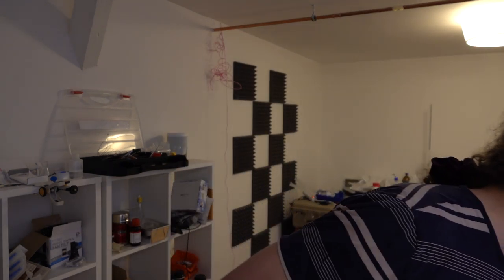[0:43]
Cool. So, I've been doing interesting stuff, and no, it's not a pipe bomb. I've been trying to make a cesium still, which I need some cesium, and not just a little bit, because I want to study the surface chemistry of it, and because almost no one ever uses cesium, it's really expensive. So if you want to buy cesium from a reasonable chemical supplier, it's almost the price of gold.
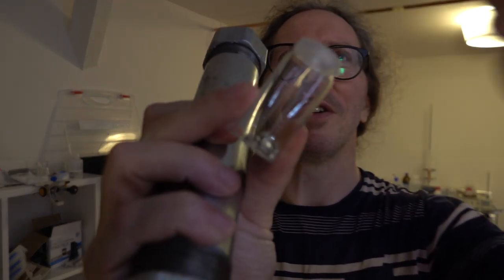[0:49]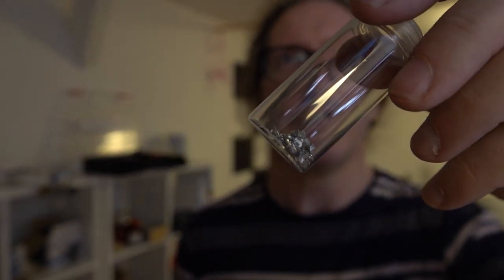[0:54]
Whereas if you make it yourself, it's lots cheaper, like 10, 100 times cheaper or something. And the way you make cesium is very simple. You get some lithium, like that. That's lithium. I'm going to focus. Come on, focus. There we go. That's some lithium. And you chuck that in with some cesium chloride. And after that, you heat it up to a few hundred degrees, and the cesium becomes volatile, and you just
distill it off. But I can't do it with nitrogen there, because nitrogen reacts with lithium really quickly. You can't do it with oxygen there, because then your cesium just catches fire. And, of course, it all gets fairly hot. So when I previously did this on a barbecue, I just flushed the whole thing with argon and crossed my fingers that the whole thing would be airtight enough. Sort of enough to get some cesium off.
But this time, I need to be able to do it on a much bigger scale and a lot better. So the way you're going to do that is you're going to get something like that, which you've got to seal at both ends, like airtight seal. It's got to be able to hold a vacuum, and it's got to be able to take at least 600 degrees Celsius. It's getting on for red heat. And whatever you do the seals with must be fairly resistant to, well, it's going to be molten cesium chloride, molten lithium chloride, lithium metal, and cesium.
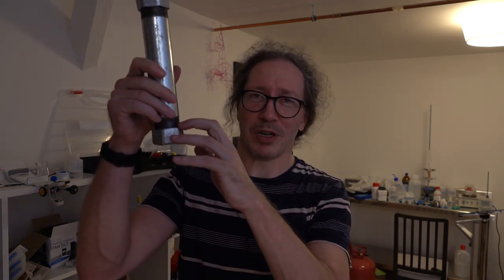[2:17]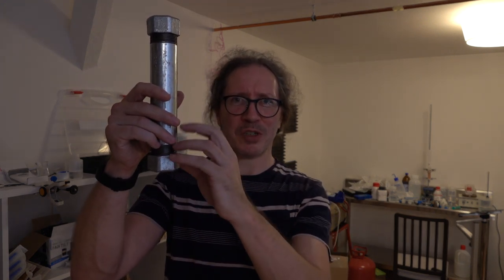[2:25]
If any of what you're using here is attacked by, say, cesium gas, you know, cesium forms an alloy with it or something, then once you start making your cesium, it's just going to rot away your seals, the whole thing's going to leak, and that's going to be the end of it. In the first instance,
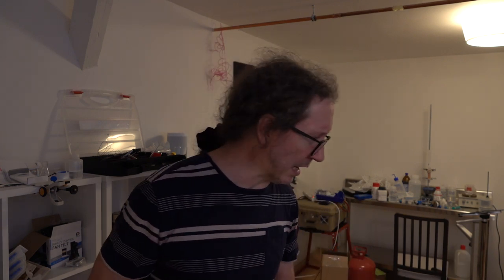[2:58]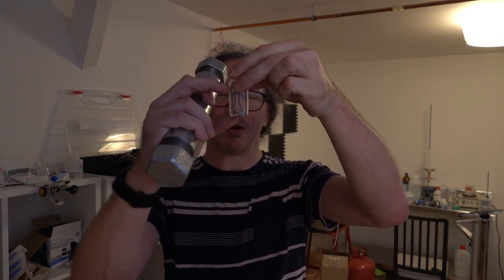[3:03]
when you're doing dangerous stuff, there is always a phased approach. The first thing is you just sort of do some proof of concept stuff, and once you're convinced of that, you move on to the more dangerous stuff. So in the first instance, my goal was set for, I wanted to distill 50 grams of cesium, which is about 20 mils. 20 mils, yeah, it's about that much cesium. So it's not great amounts.
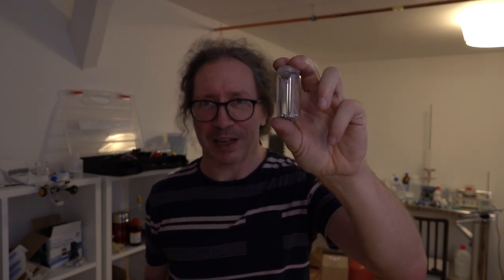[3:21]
Cesium, whilst it catches fire really quite easily, it doesn't release a lot of energy when it does. So burning about 7 grams of lithium releases about the same energy as burning 150 grams of cesium. It's that sort of league. So yeah, even if it all goes terribly wrong somehow, it's limited in what can go wrong. I need to be able to test my seals.
Now the thing is that I'm not very good at working with metals. Normally, with glass, I'm pretty competent. So my first response would be, fine, I'll just make the whole thing out of glass. Problem with that, lithium eats glass like a son of a bitch. In fact, I did promise you on this channel some time ago, I will show you why you should never get molten lithium anywhere near glass. Absolute nightmare.
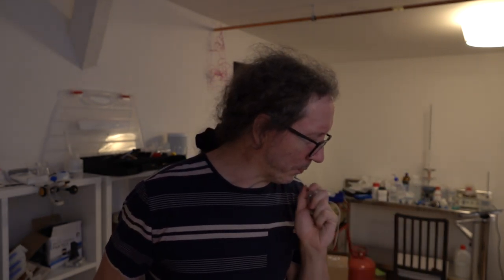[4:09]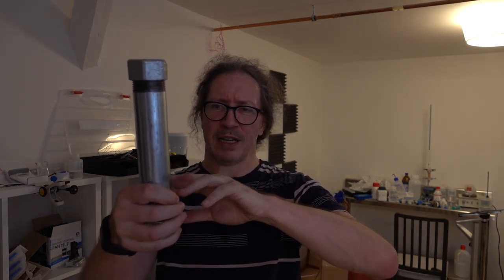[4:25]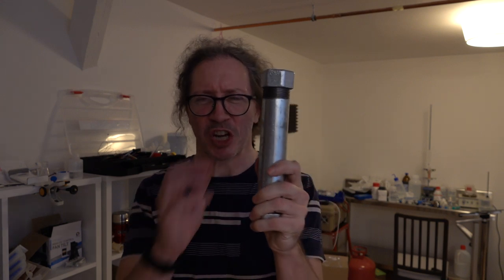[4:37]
So you can't make it out of glass because you're dealing with lithium. If it was just the cesium on its own, you can distill the cesium in the glass without too much trouble. So in the first instance, when I'm getting the lithium and the cesium chloride and I'm distilling off the cesium, it's got to be in an all metal apparatus. And so you're looking around for something cheap, fairly solid. Steel is fairly resilient to lithium and cesium.
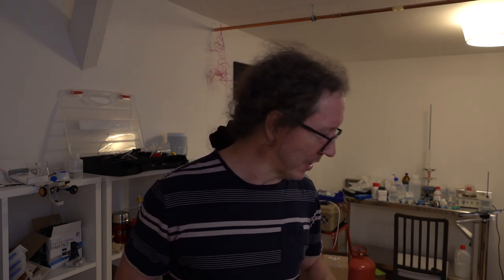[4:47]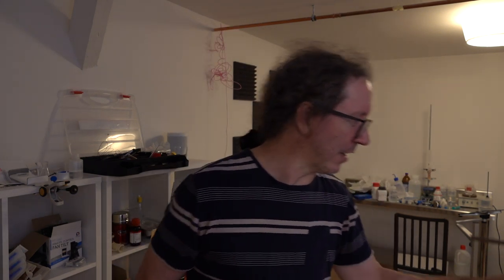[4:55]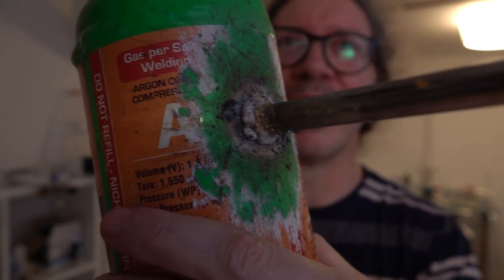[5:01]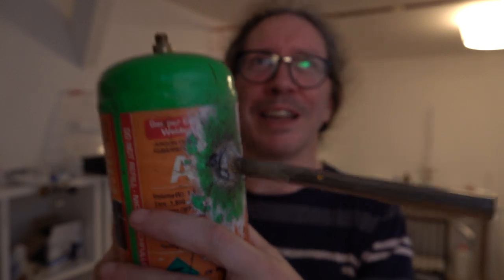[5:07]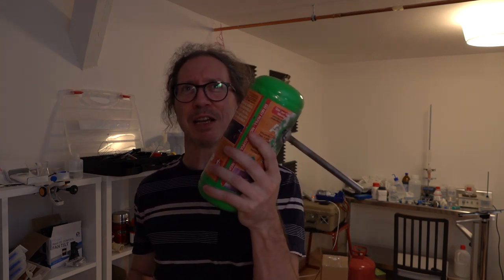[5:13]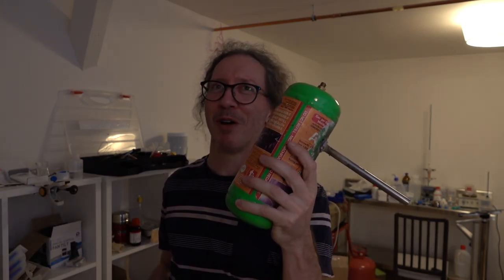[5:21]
And so I've been practicing my joining skills with metals, which in real terms basically equates to I have been torturing metal. My first attempts at welding will make many people who are any good at welding absolutely wince. So it's a MIG welder. There's no protective gas or anything, but this is almost literally my first attempt at doing it. And it's okay. Structurally, it'll hold. You know, it doesn't need to hold great loads or anything, but it does need to be able to hold a good vacuum. And this doesn't hold a good vacuum.
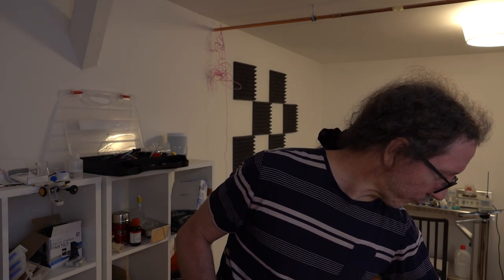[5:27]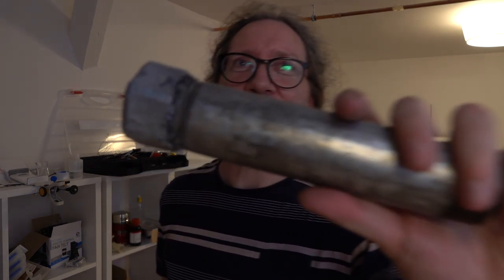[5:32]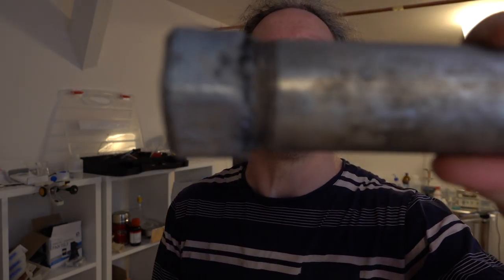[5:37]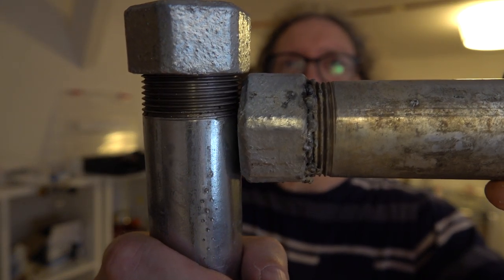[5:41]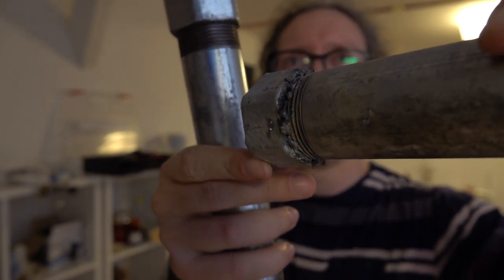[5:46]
And then I tried welding one of these guys shut, which was equally... come on, focus here. Focus. Yeah, there we go. So this thing, it's almost airtight. With a bit more practice, I could probably do it. But MIG welding, when you need it to be vacuum tight, nah, I'm just not that good.
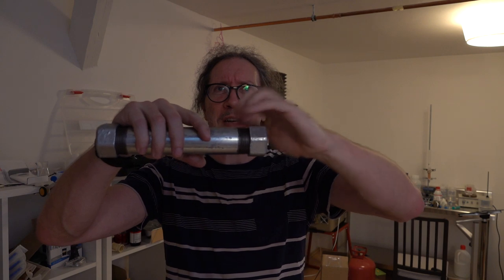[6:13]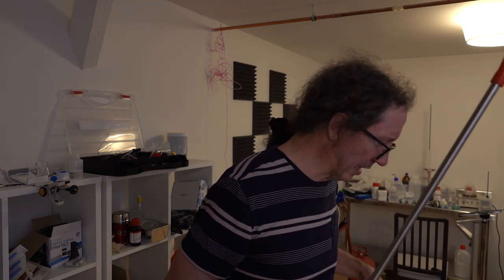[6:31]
However, there are various lower temperature options available to you, actually not that much lower temperature, like brazing. So what you do is you get your metal, you coat it with some salt of some sort that melts and protects the metal surface, and then you melt another metal on top that's very wetting, and it gets into all the cracks and makes some fairly nice seals. And with that, I had a degree more success.
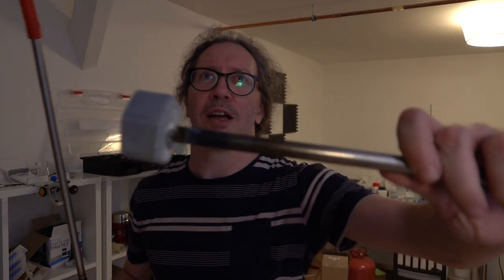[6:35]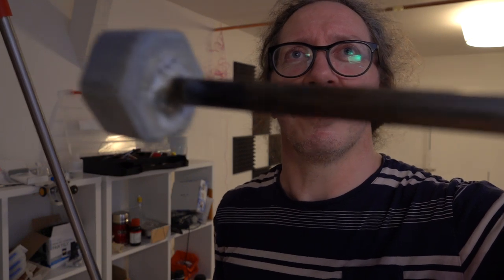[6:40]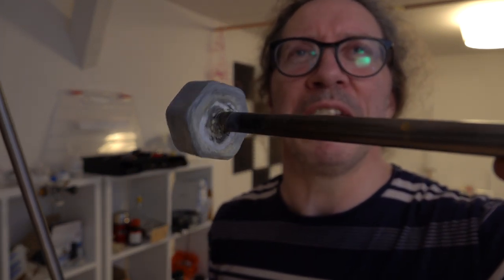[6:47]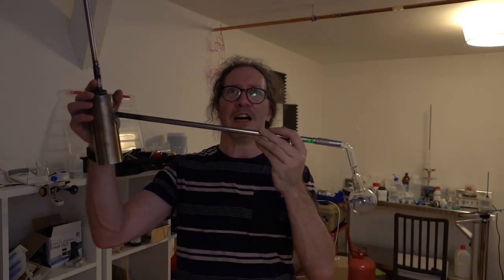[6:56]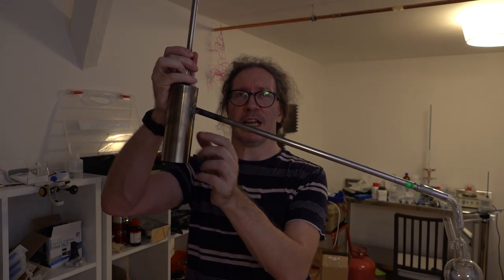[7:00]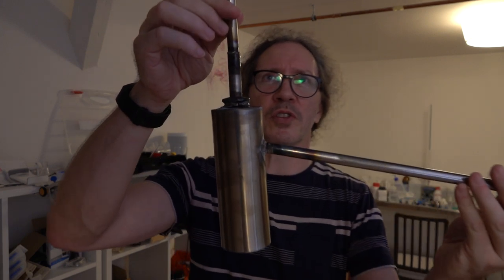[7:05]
So that was one of my first attempts on one of these guys. And if you would actually focus, there we go. Okay, he's not too bad. He's sort of airtight. Not so sure I would trust that, but on this little stainless steel boy, it's looking quasi-functional. So this is a stainless steel can here. This will take a vacuum very easily. Some fairly chunky tubes on the side.
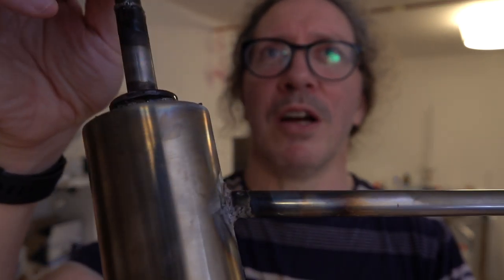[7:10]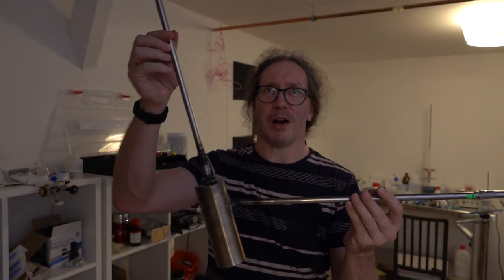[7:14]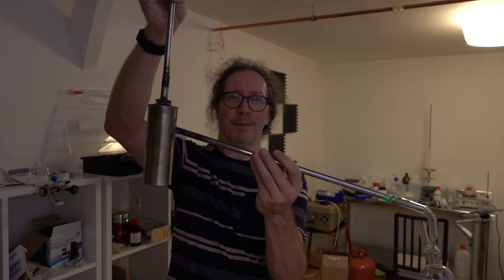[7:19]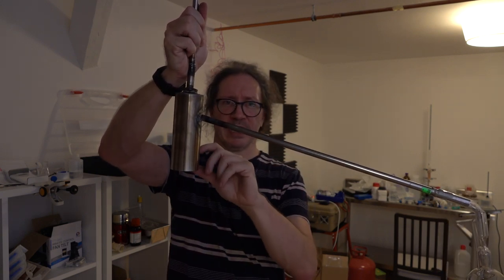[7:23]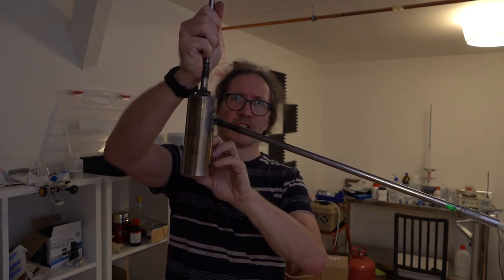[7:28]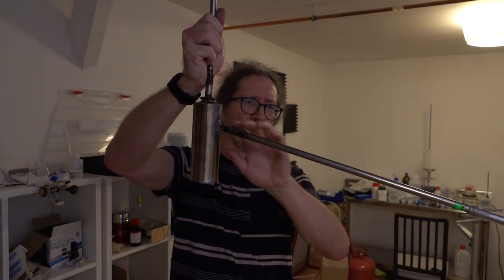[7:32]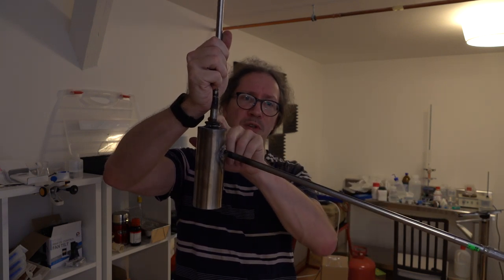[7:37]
Now you might be wondering, did I really screw up when it comes to how long these tubes are? And no, these tubes are long for a very good reason. I don't have any active cooling on any of this. So what I'm looking at is distilling stuff. It's going to be about 600 degrees here. It's going to be about 400 degrees by the time the stuff is coming off. Metal is a fairly good conductor, it turns out. Even when I was doing some of these joints, it was getting too hot to hold.
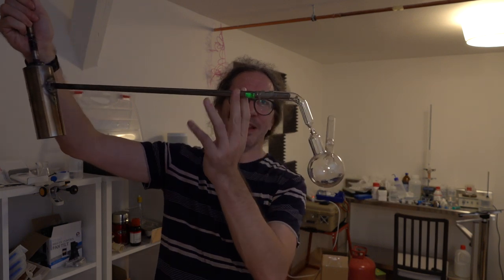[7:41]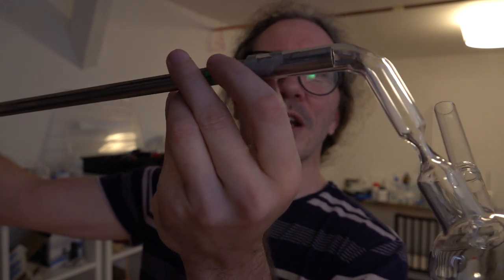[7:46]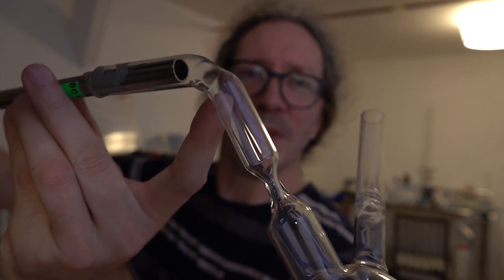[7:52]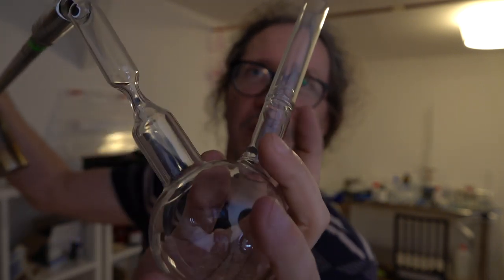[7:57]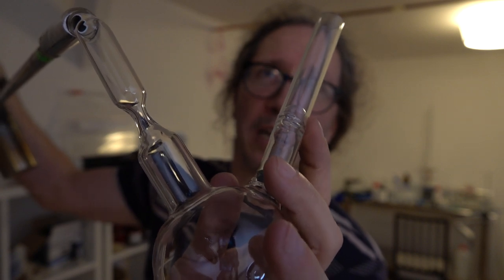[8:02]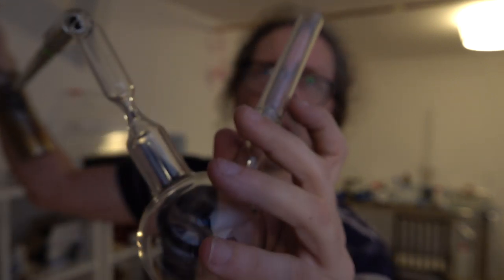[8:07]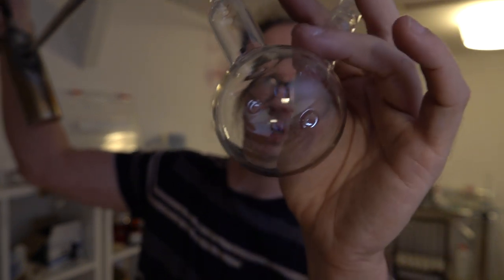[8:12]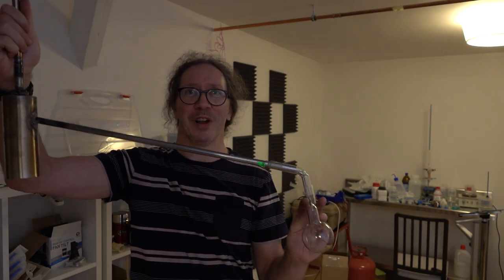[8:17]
But at the end here, this is just epoxy holding on the glass thing. So what's going to happen is the cesium is going to drop out the end there, and it's going to go through the little constriction into the flask. The flask's got a break seal on, so it'll be perfectly sealed, but when I want to open it later, I'll put that on another piece of glass, and then I can just break the little seal here with a magnet. So once I've got all my cesium in here, I'm just going to seal it off there, and that should hopefully be it.
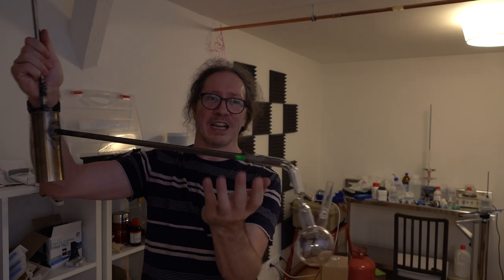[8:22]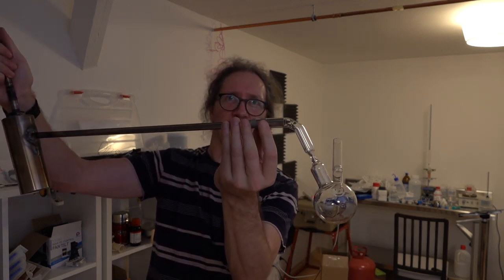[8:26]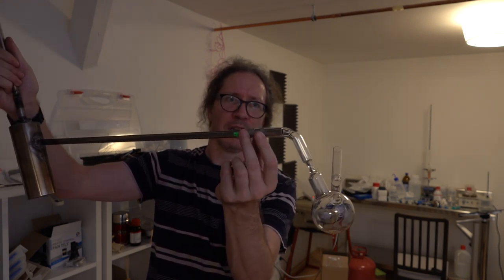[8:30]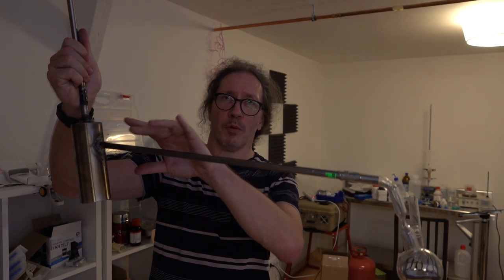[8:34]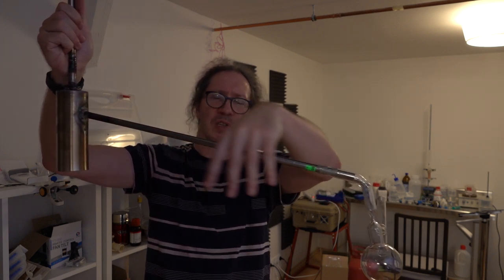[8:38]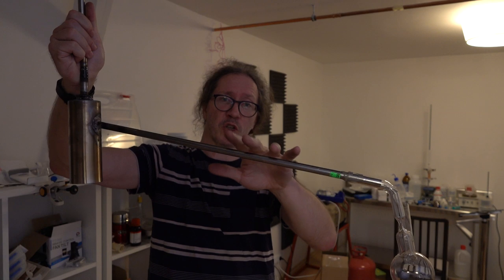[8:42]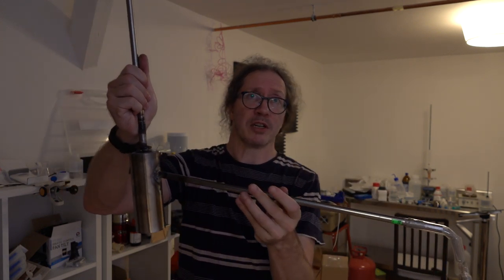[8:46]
So the reason this is so long is it has to get cool enough by the time it gets to here that it's not going to trash the epoxy. If it trashes the epoxy, I lose the seal, air gets in, the whole thing is kaput. What I'll almost certainly do is put a little serviette or something over here, which I can constantly spray with water to make sure that this doesn't get above 100 degrees. That should be fairly sensible.
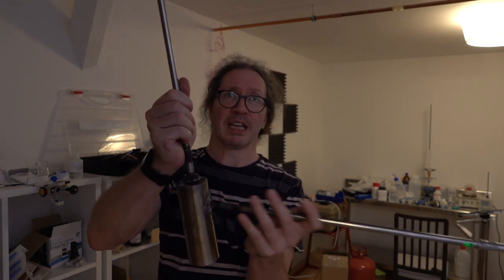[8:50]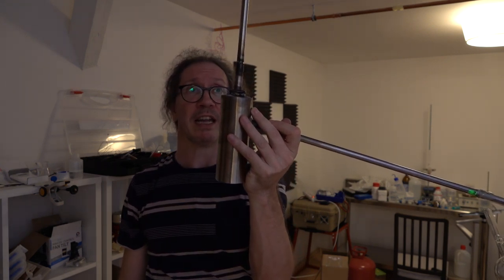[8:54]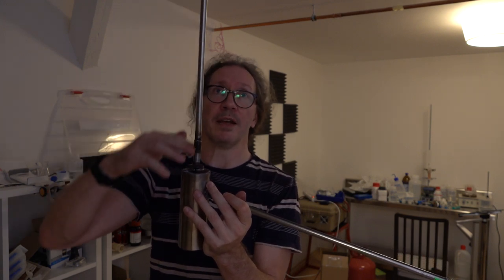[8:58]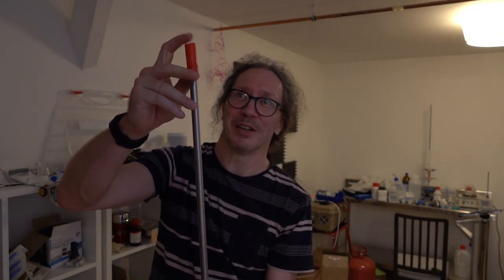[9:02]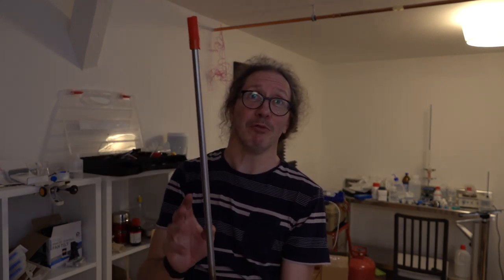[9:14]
Likewise, I need to be able to get my lithium and my cesium chloride in here. So that's what the long tube at the top is for. But again, I need to be able to connect something to put the vacuum on at some point. And I don't have any metal to glass seals, so it's just going to be a rubber seal here.
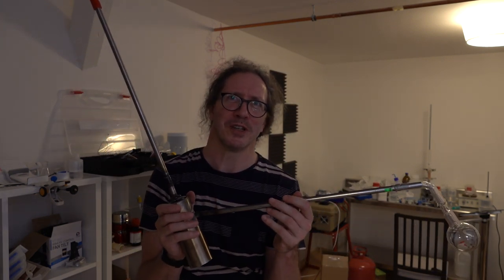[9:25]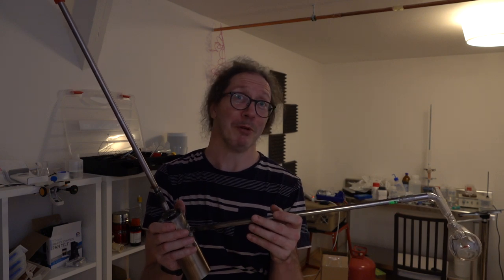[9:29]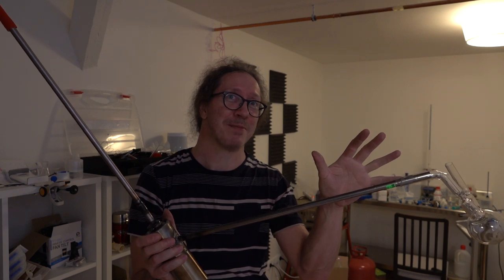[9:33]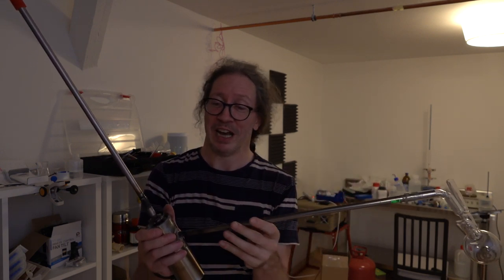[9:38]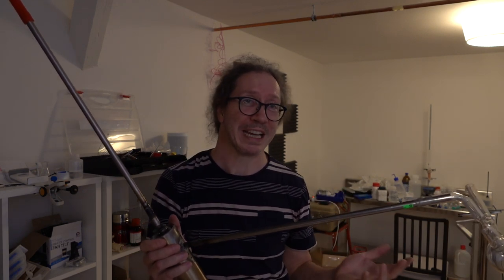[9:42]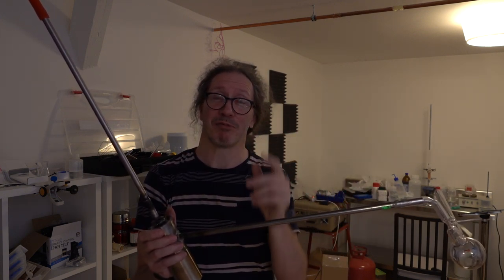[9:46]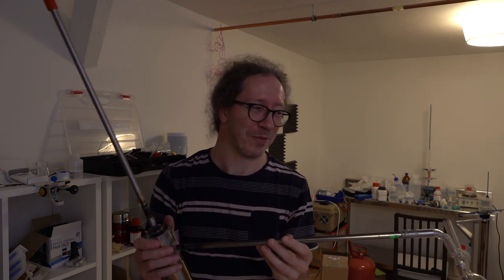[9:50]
And in principle, once you've vacked it down, you should just be able to seal it and that's it, you're done. Prudence says that when you're doing it for the first few times and you're not entirely sure what's going to happen, you leave it open to the vacuum system, because then you can see what the pressure is in the system. And if the pressure starts going up for any reason, there's no real way it can, but if air starts getting in here, you'll see the pressure change. Important need to know information.
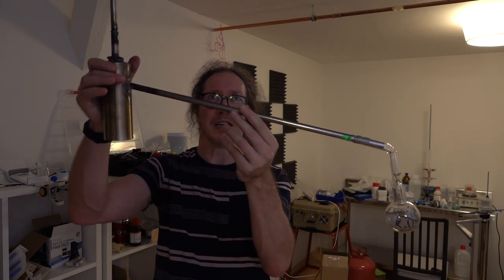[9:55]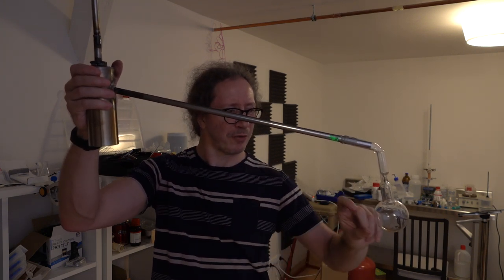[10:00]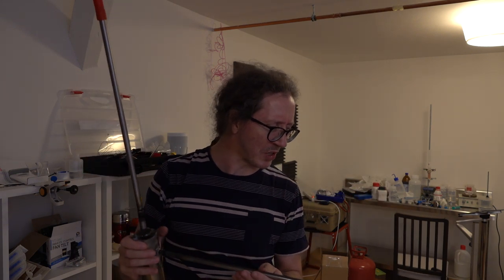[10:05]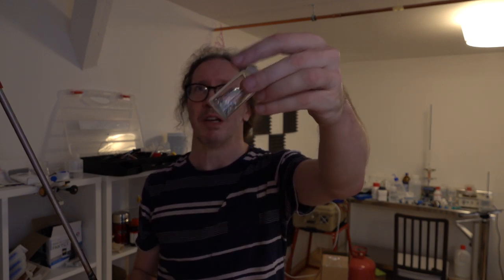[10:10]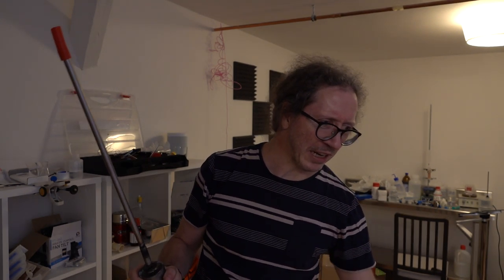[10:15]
Hopefully I'm going to give that a go tomorrow and see if I can actually distill some cesium. Actually, I might go for 50 grams, I reckon. So to distill 50 grams of cesium, you don't need much more than that of lithium, because the molecular weight of lithium is like 7 and the molecular weight of cesium is 130 or something. So you don't need much lithium to make a lot of cesium. Cool. So wish me luck for tomorrow. And have pity for my tortured metal.